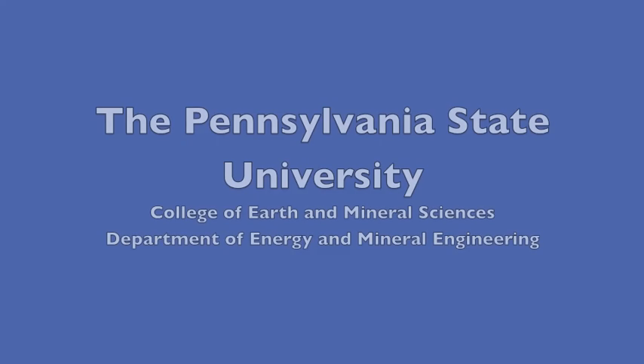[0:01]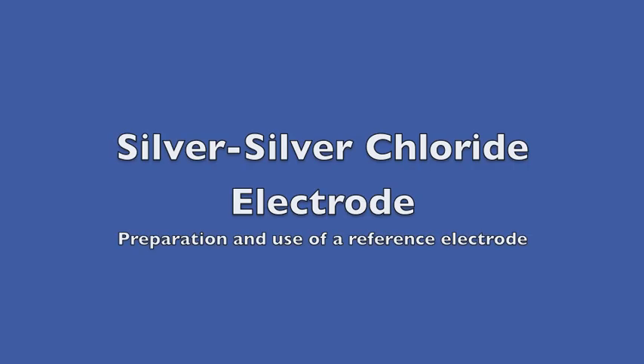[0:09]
The Pennsylvania State University, College of Earth and Mineral Sciences, Department of Energy and Mineral Engineering presents the Silver-Silver Chloride Electrode Laboratory Instructional Video.
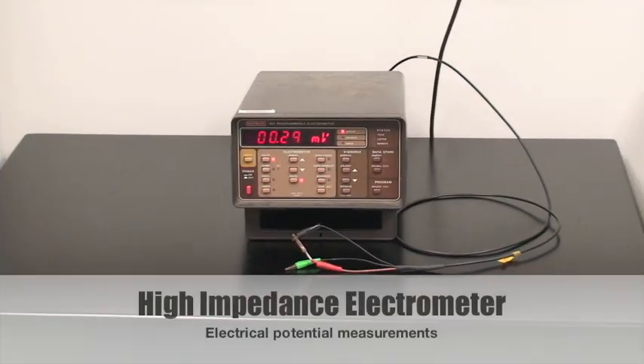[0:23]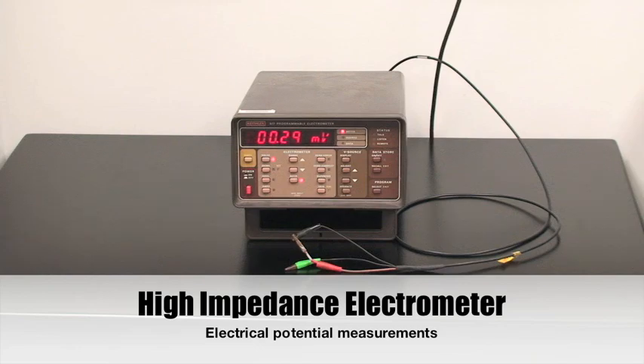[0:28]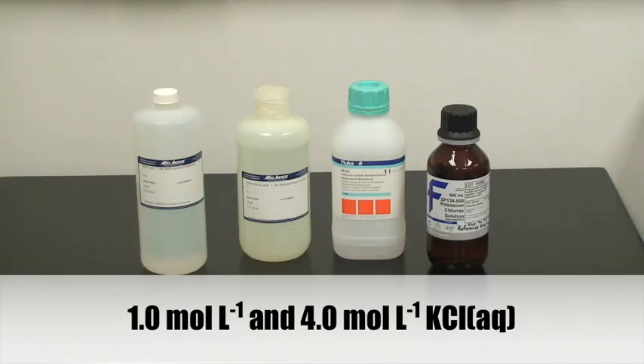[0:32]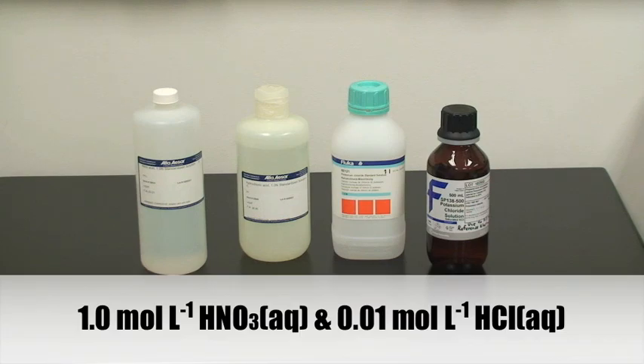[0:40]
Equipment and materials. We will need a high impedance electrometer for electric potential measurements, 1 molar aqueous potassium chloride, 4 molar aqueous potassium chloride, 1 molar nitric acid, and 0.01 molar hydrochloric acid.
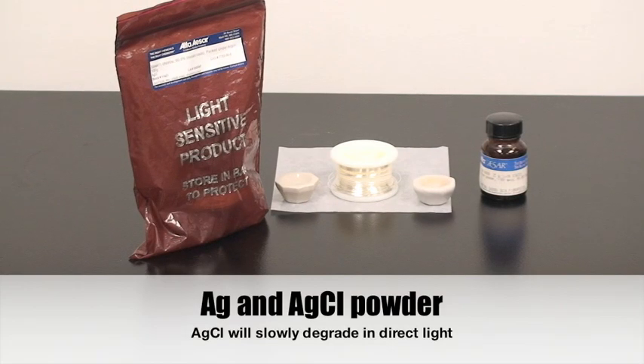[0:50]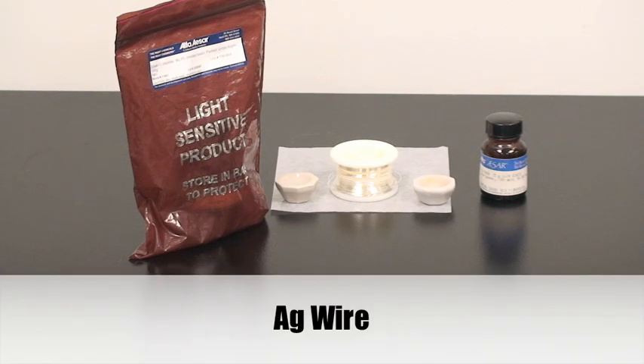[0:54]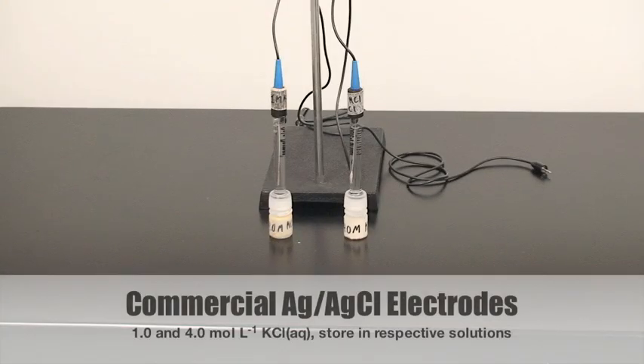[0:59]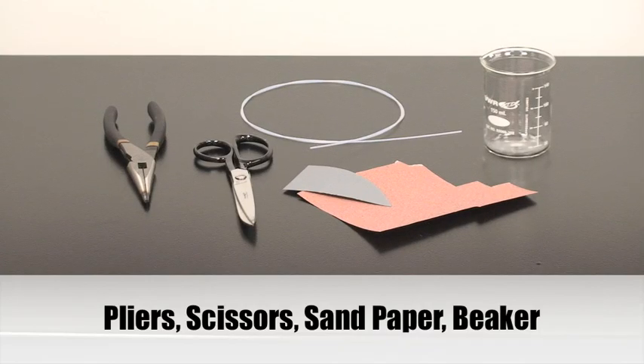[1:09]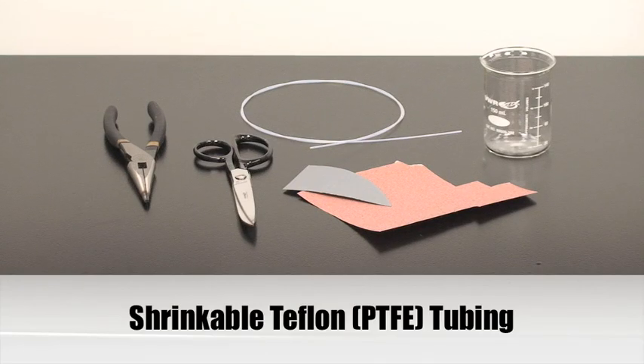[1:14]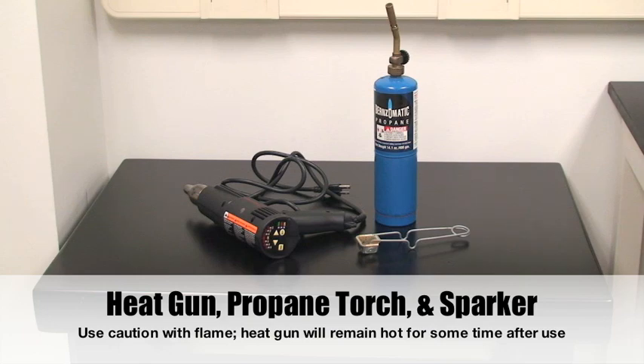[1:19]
Silver chloride and silver powder, as well as a spool of silver wire. A 1 molar and 4 molar potassium chloride silver-silver chloride reference electrodes. Pliers, scissors, sandpaper, a beaker, as well as shrinkable Teflon tubing. An electric heat gun, propane torch, and sparker or lighter.
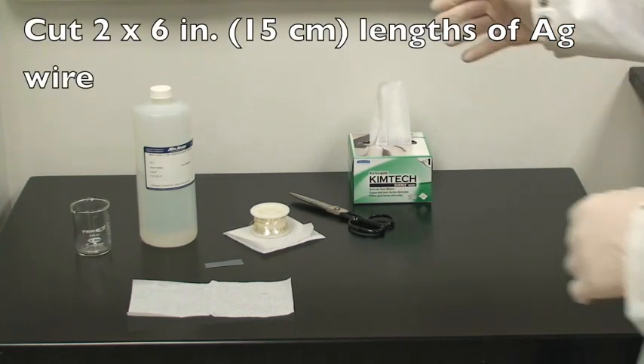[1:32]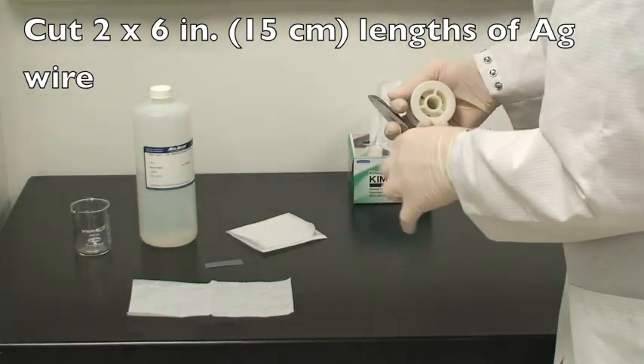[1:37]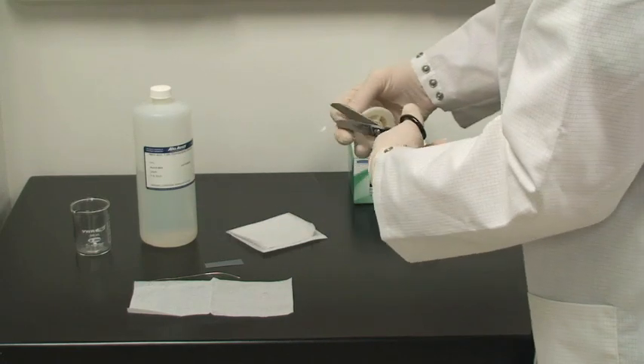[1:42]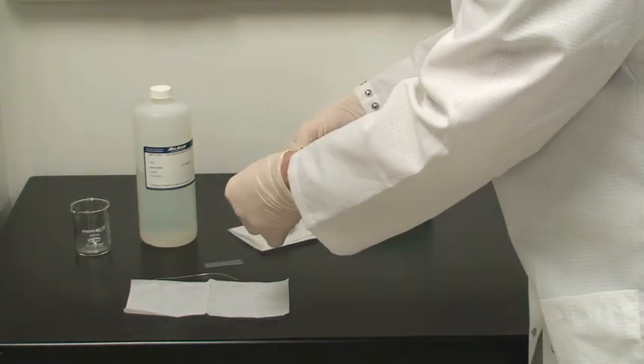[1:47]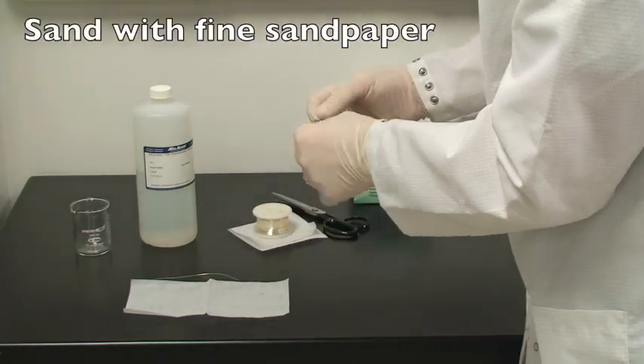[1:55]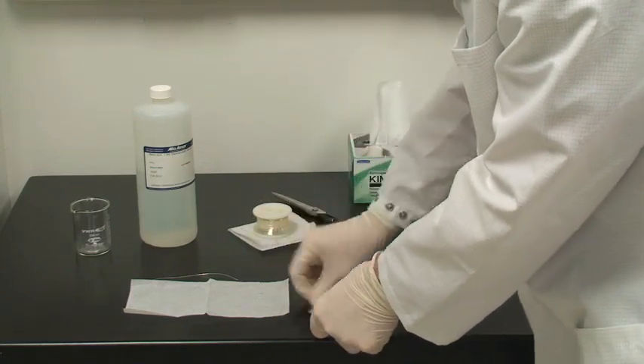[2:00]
Electrode preparation. Begin by cutting 2 6-inch lengths of silver wire. Next, lightly sand the bottom 1 to 2 inches of each wire to remove any oxidation or impurities.
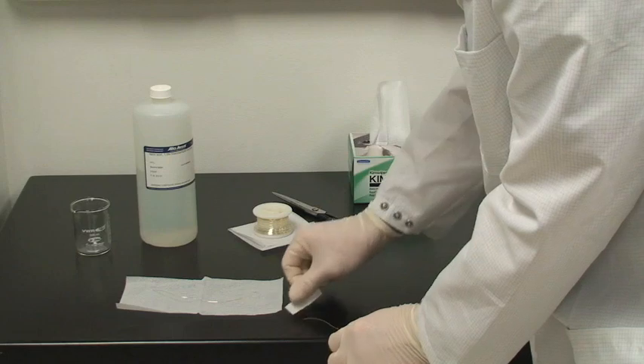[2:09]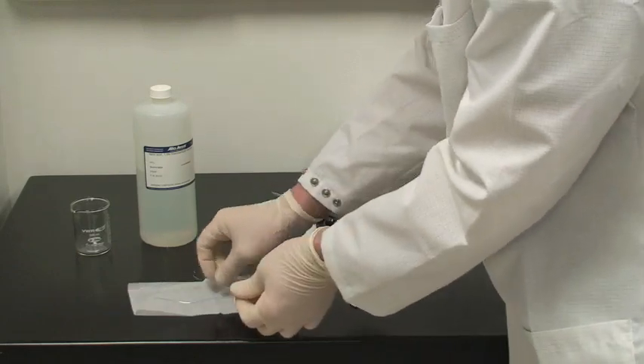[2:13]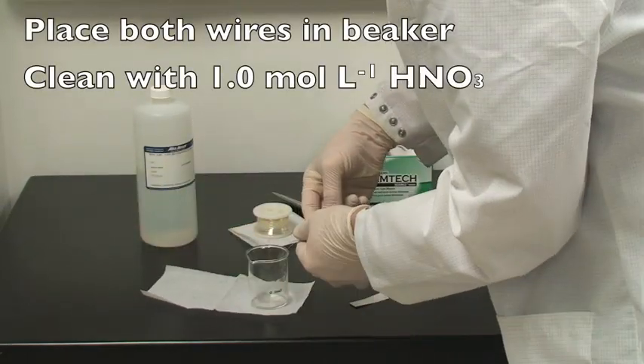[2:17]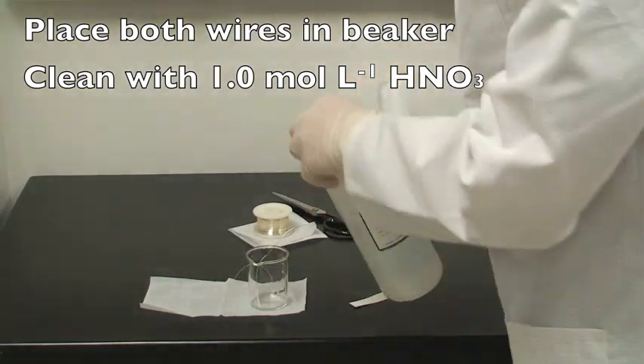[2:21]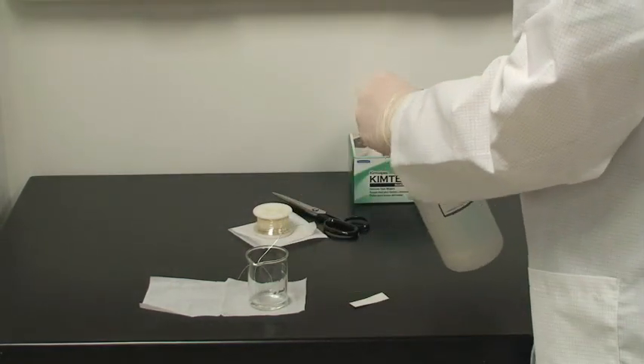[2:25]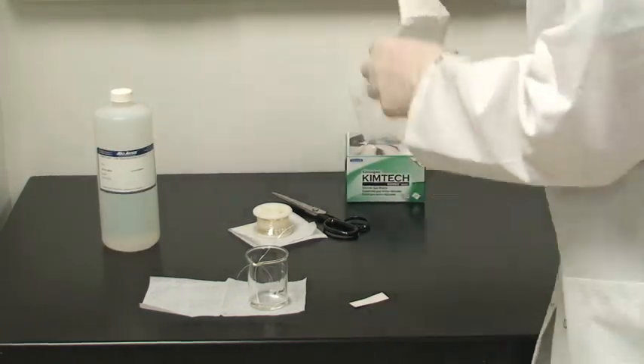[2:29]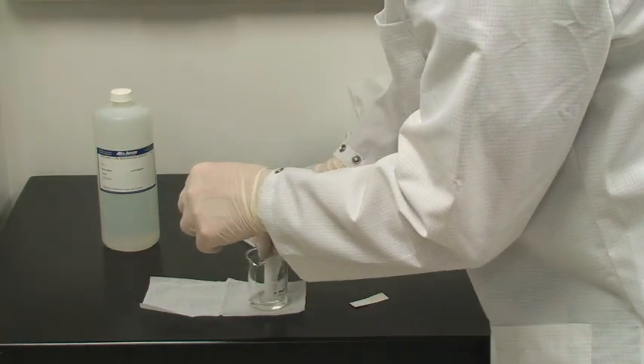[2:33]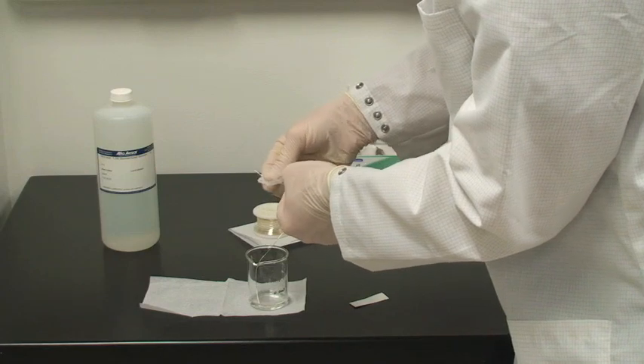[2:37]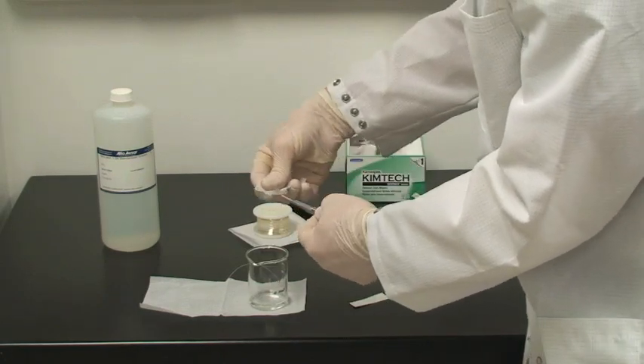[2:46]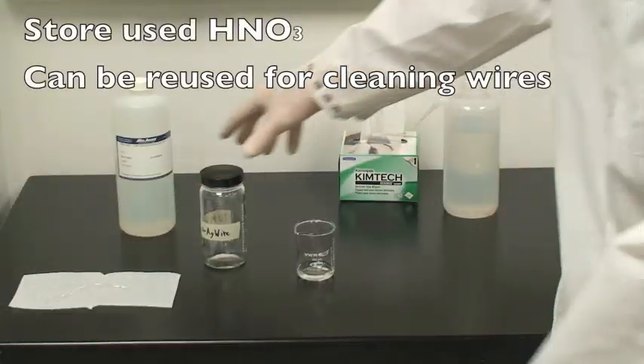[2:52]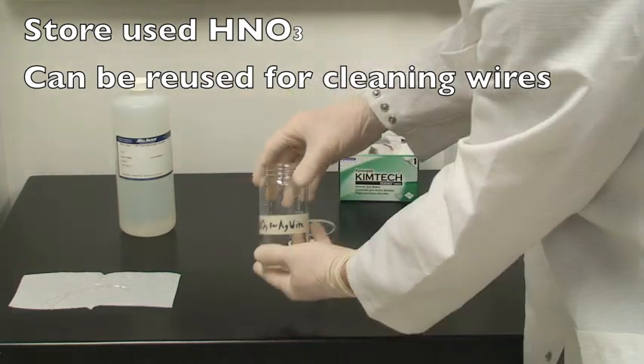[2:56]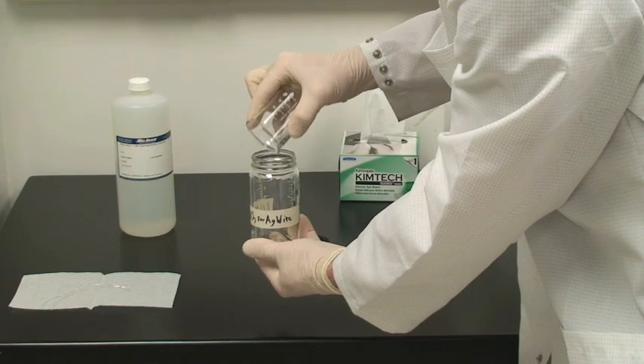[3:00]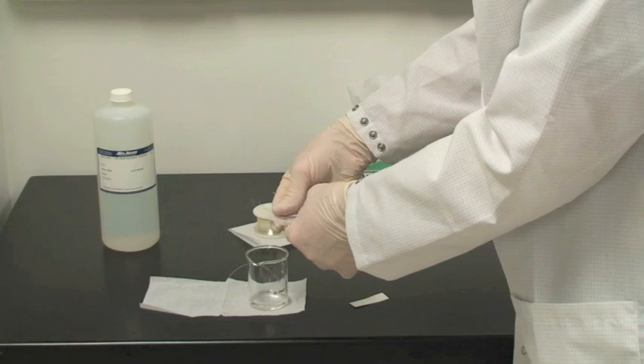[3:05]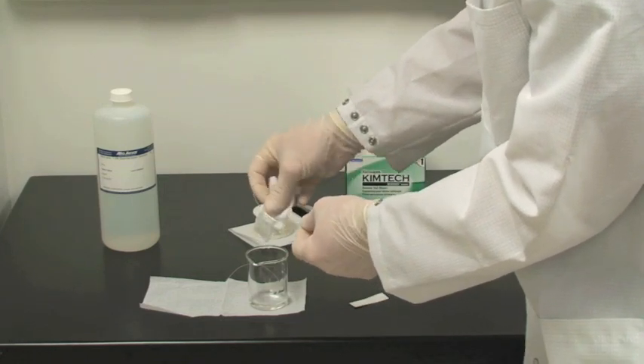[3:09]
Place both wires, sanded end down, into a clean beaker and add a small amount of nitric acid. If possible, please reuse the nitric acid in the marked storage container. Then use the nitric acid to clean the sanded edges of the wire to further improve the purity of the silver. Then return the used nitric acid to the marked storage container so that it may be reused by other students. Finally, rinse the electrodes with distilled water and wipe clean.
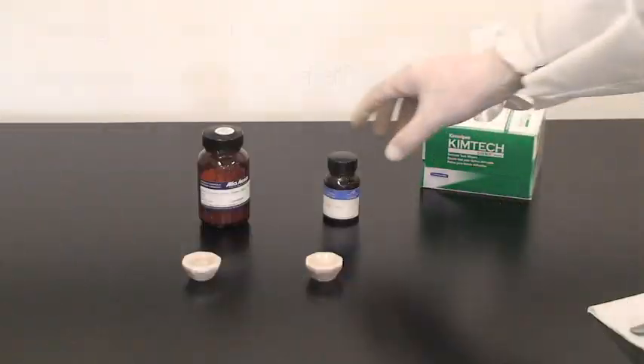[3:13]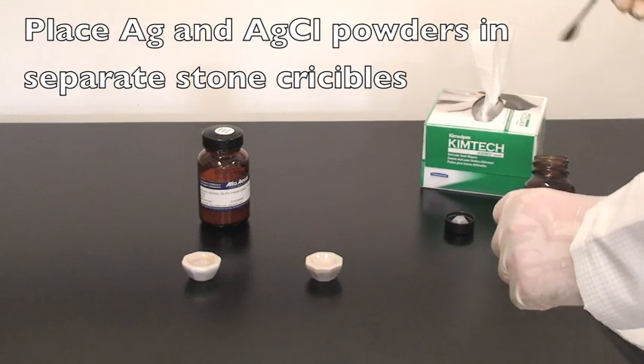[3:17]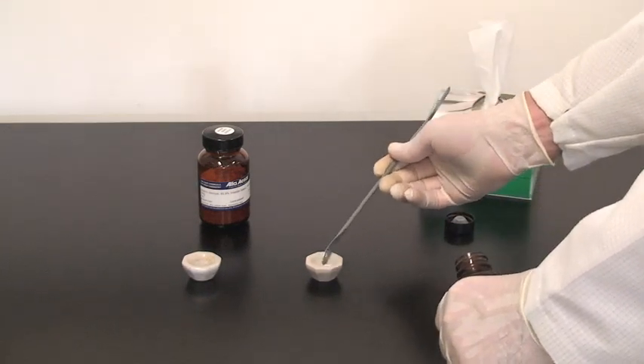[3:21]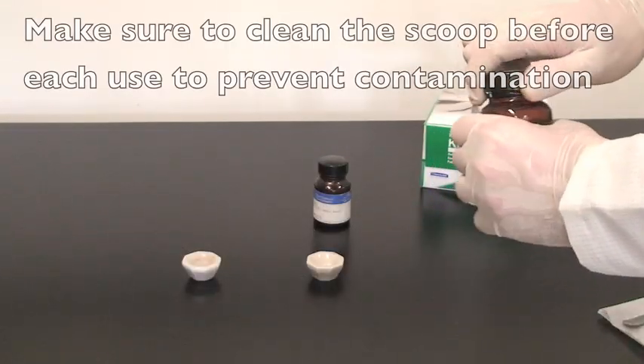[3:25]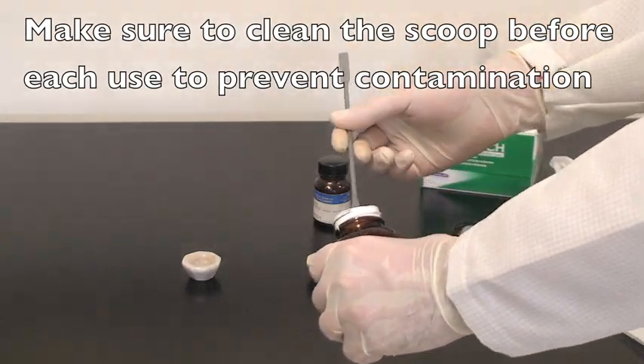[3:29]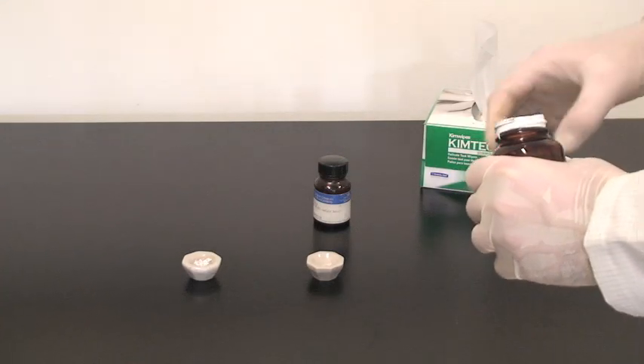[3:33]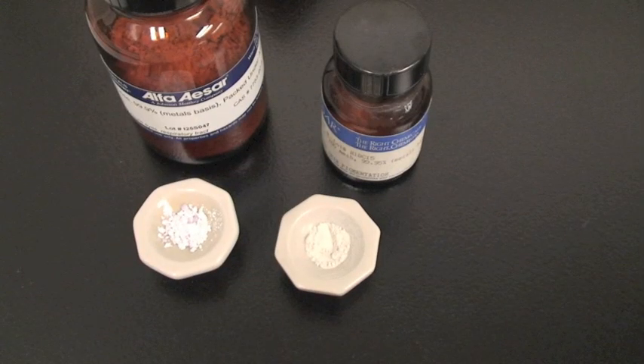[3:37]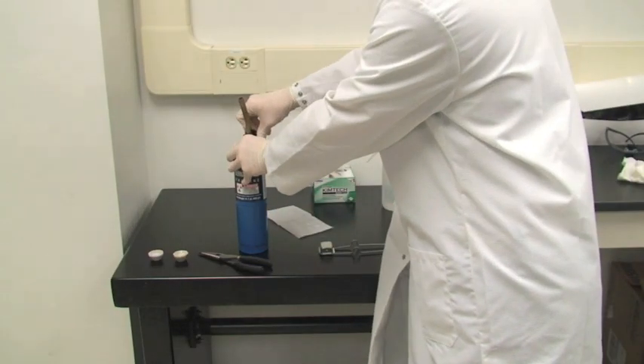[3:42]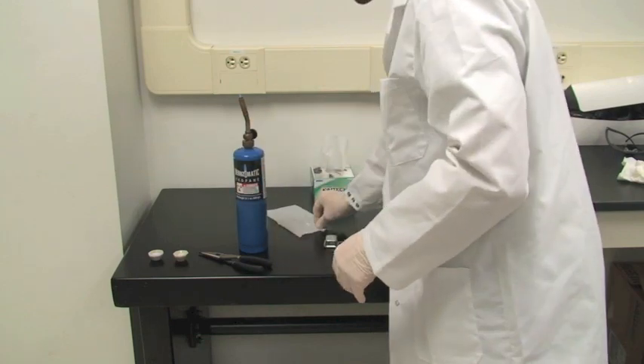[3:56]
We will now place a small amount of silver powder into one container and silver chloride powder into a separate container. We'll now use the propane torch in order to form the actual electrodes. Please ensure that the propane torch is not pointing towards you or anyone else. Turn the gas up to a moderate amount, use the sparker to ignite it, and then turn the gas flow rate down to the smallest quantity that will maintain a flame.
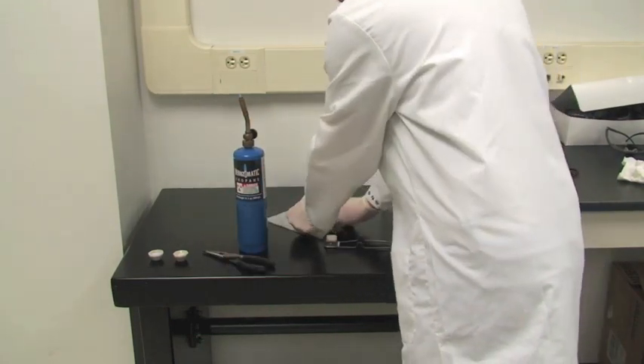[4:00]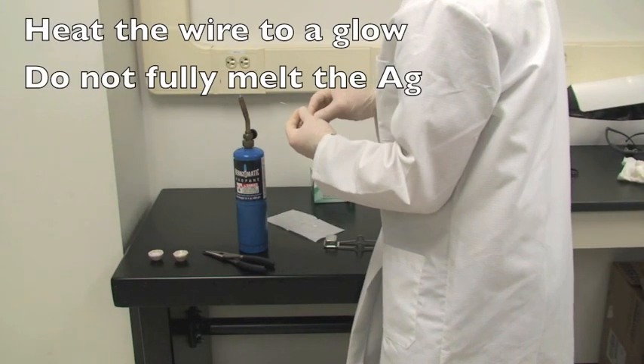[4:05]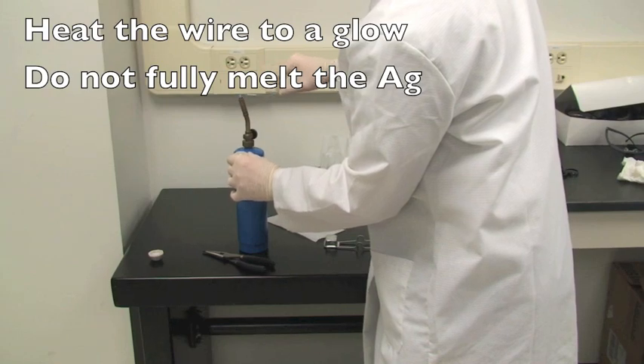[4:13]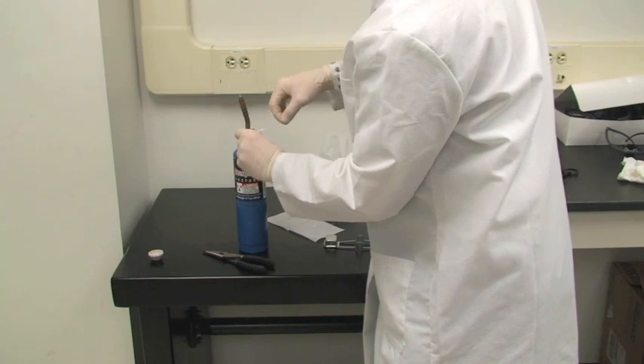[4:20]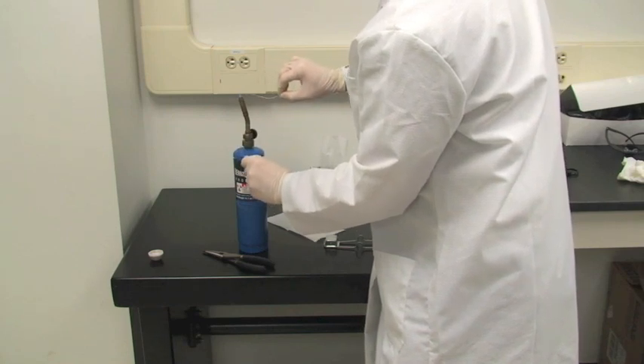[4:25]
You must be careful not to melt the silver wire completely, or you'll have to start again from scratch. However, if you lose only an inch or so of the electrode, you can continue and start again with the same wire. Begin by heating the tip of the wire until it begins to glow. If you hold the opposite end of the wire, it does not conduct sufficient heat to harm your hands. However, if you want more precision, you can use the pliers to hold directly in the flame. Waving the wire through the flame ensures proper heat distribution.
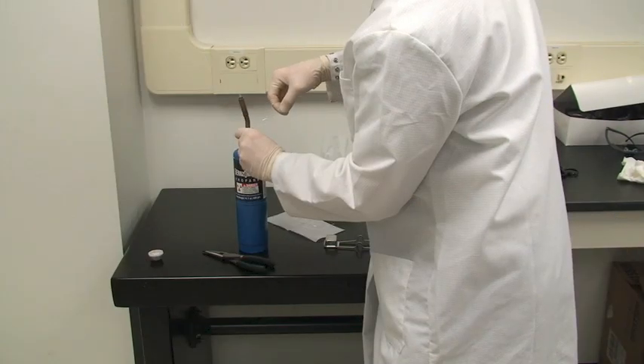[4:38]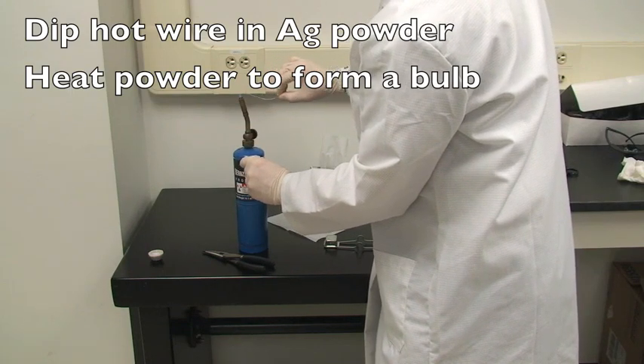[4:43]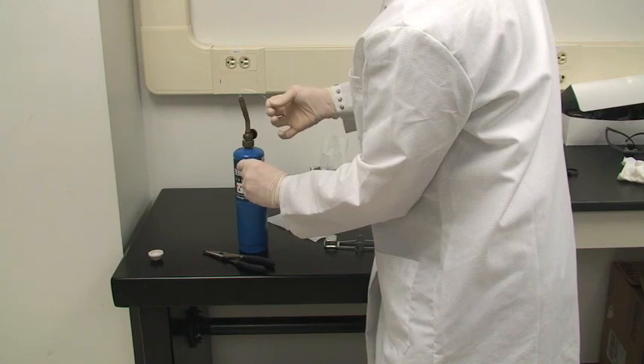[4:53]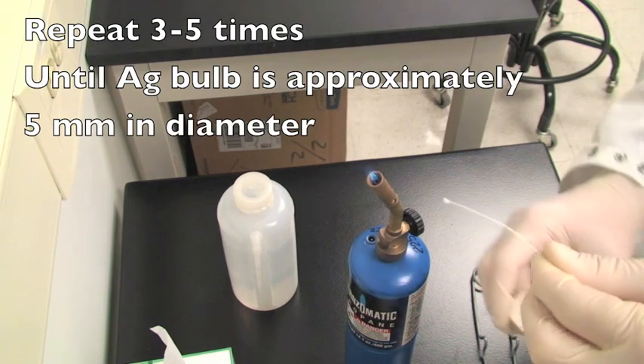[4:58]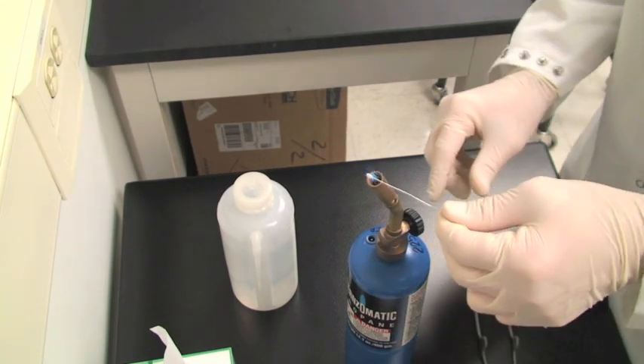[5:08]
When the wire is sufficiently hot, dip the wire into the silver powder or roll it through the silver powder, and then repeat the process by heating the silver powder until it glows. It will at that point begin to sinter onto the wire itself and become a single piece of silver. We'll repeat this process approximately 3 to 5 times until the silver bulb is sufficiently large, approximately 5 millimeters in diameter. Using some care here not to overheat the bulb will save you time in the long run by not having to repeat the entire process.
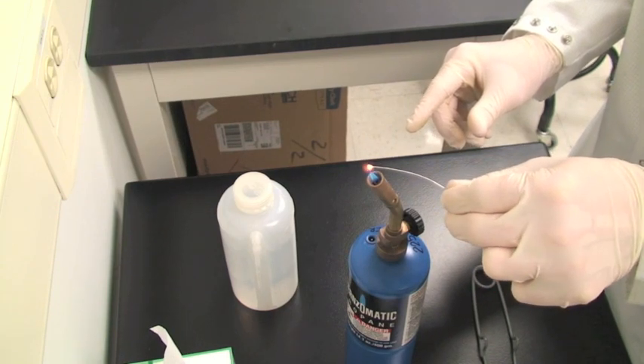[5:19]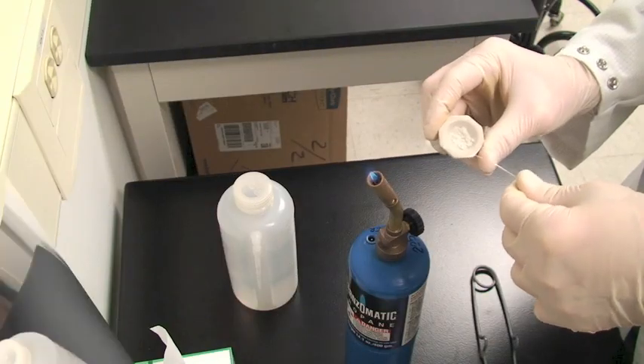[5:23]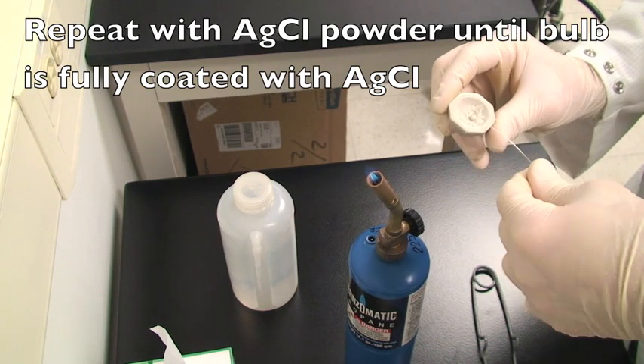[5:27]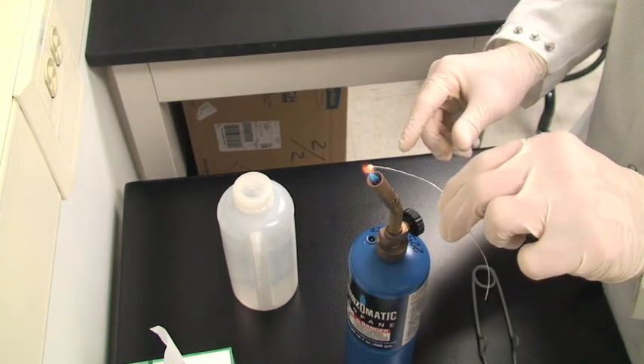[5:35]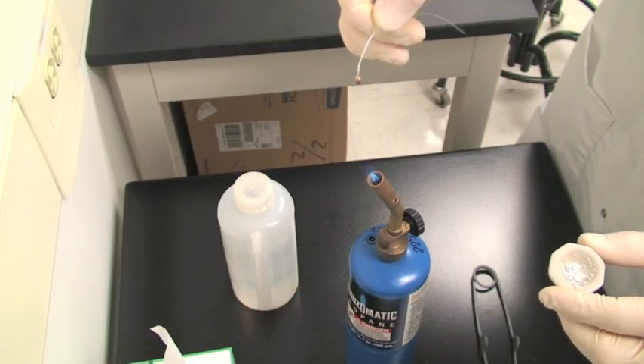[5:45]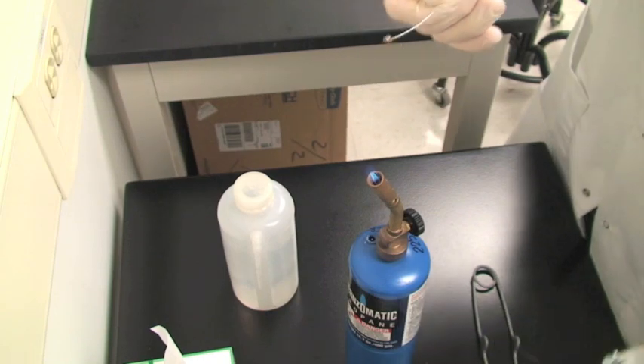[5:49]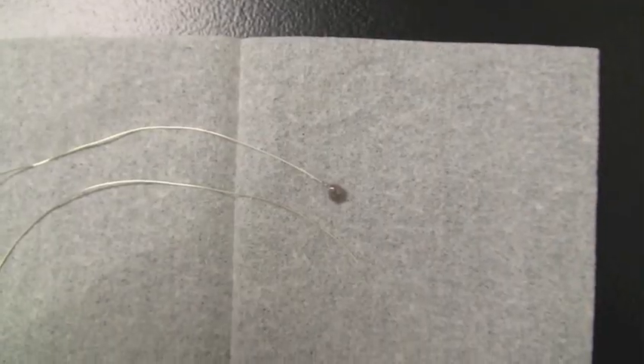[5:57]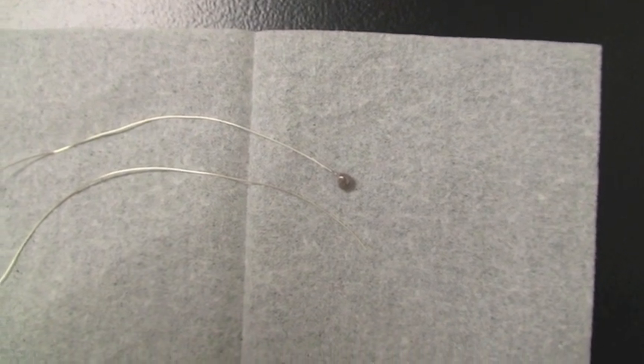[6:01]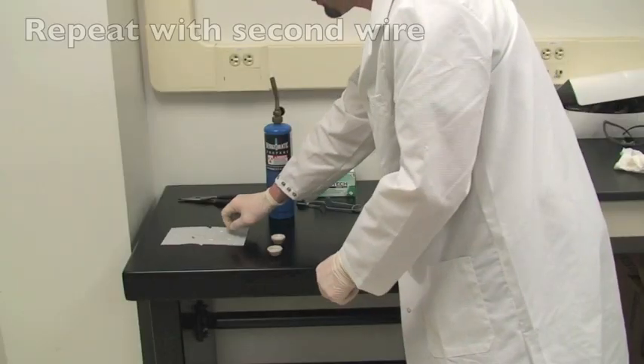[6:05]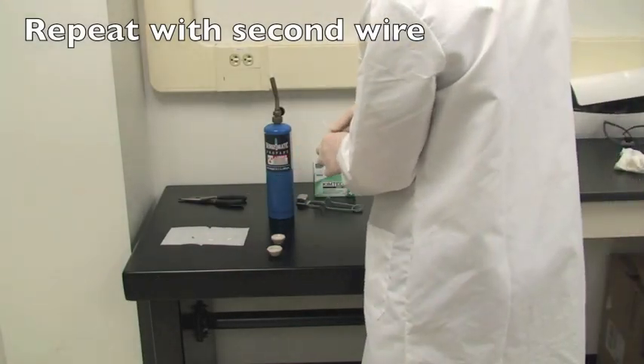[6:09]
We'll now repeat the entire process using silver chloride to coat the outside of the bulb. Silver chloride has a significantly lower melting point than silver, and thus less heat will be needed in order to form the final silver chloride coating on the electrode. The process should be repeated until the entire silver bulb has a coating of silver chloride. Repeat the entire process with the second wire to make two identical silver-silver chloride electrodes.
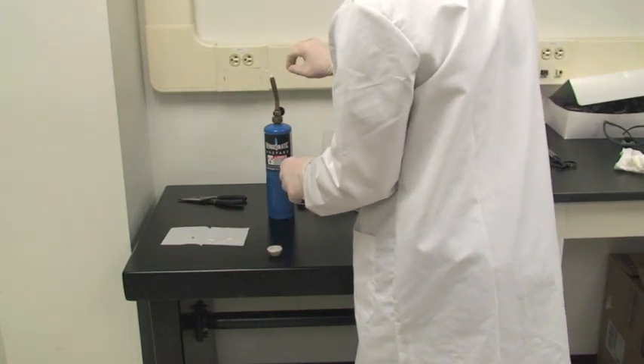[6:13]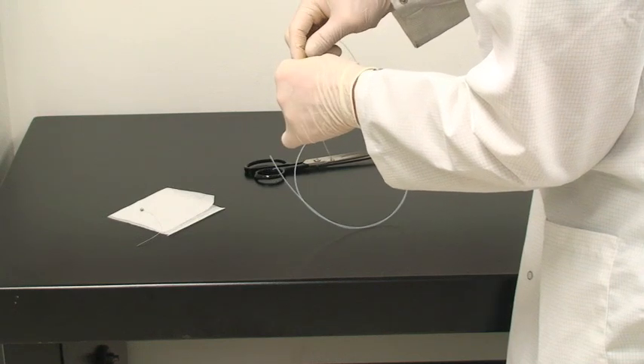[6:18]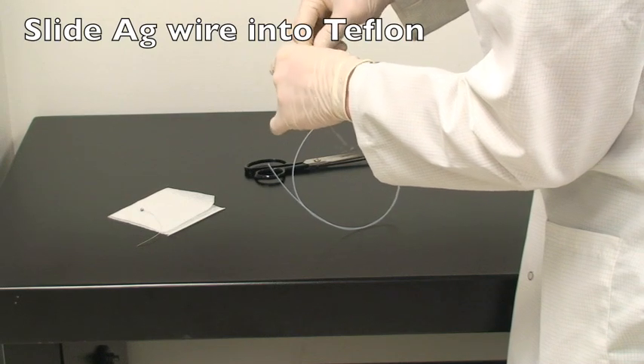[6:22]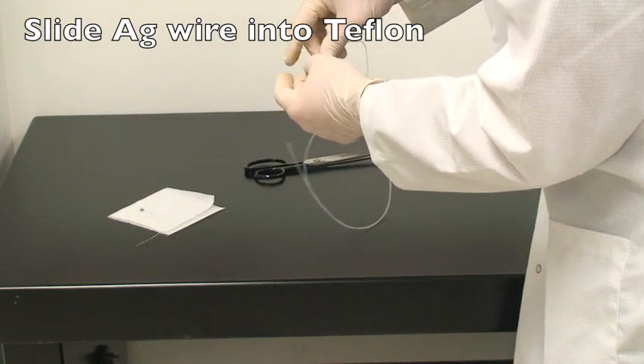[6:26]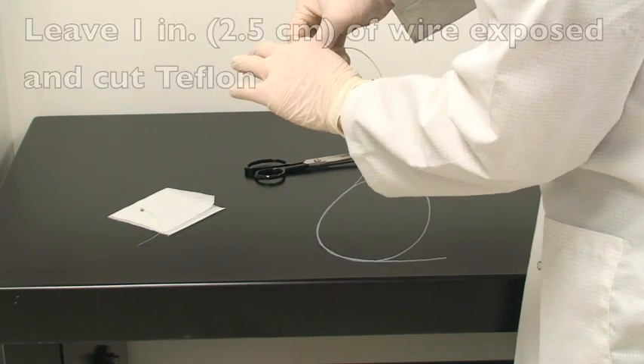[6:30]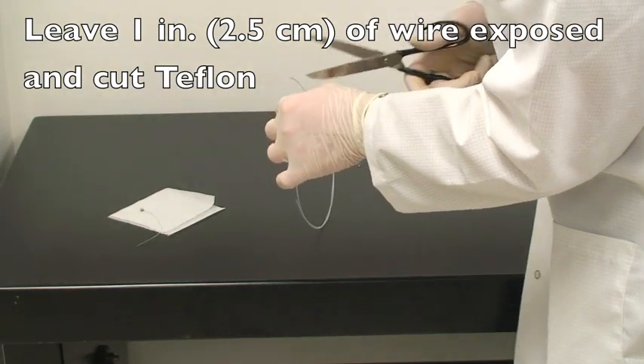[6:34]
Next, we'll coat the exposed silver wire with Teflon. To do this, we'll slide the silver wire into the shrinkable Teflon tubing. Leave about 1 inch above the bulb and then cut the shrinkable Teflon so that it's flush with the wire.
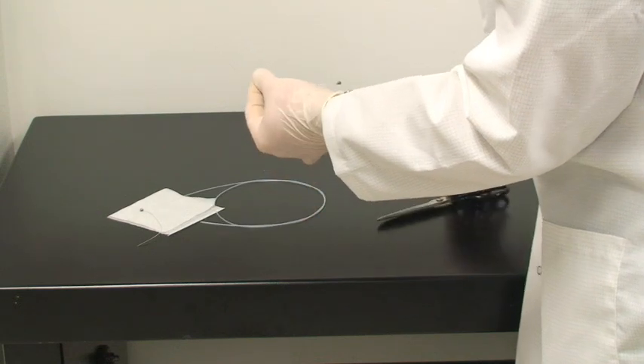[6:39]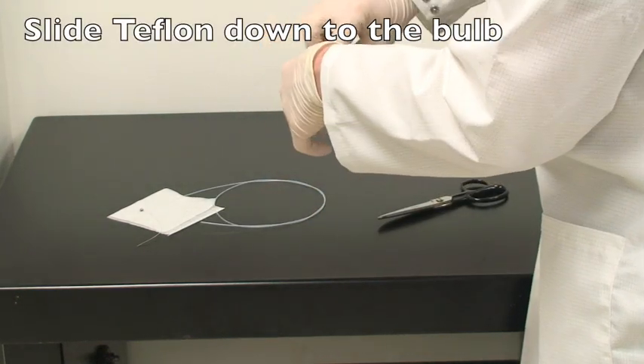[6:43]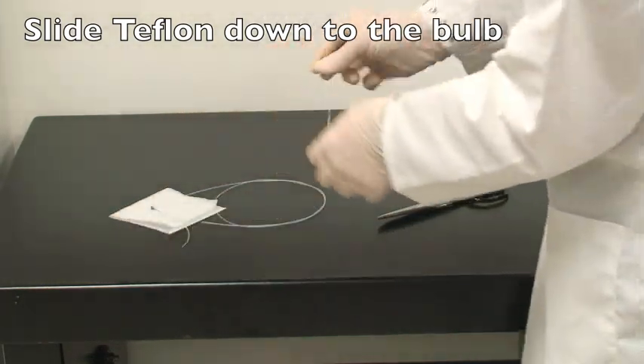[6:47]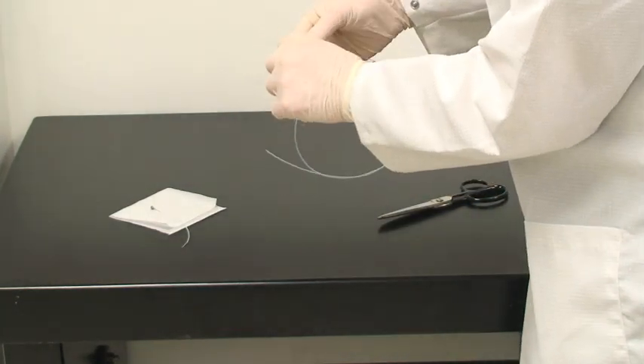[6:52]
Now slide the shrinkable Teflon all the way down so that it is flush with the bulb, leaving the only exposed silver at the top to function as a lead. And repeat this process with the second electrode.
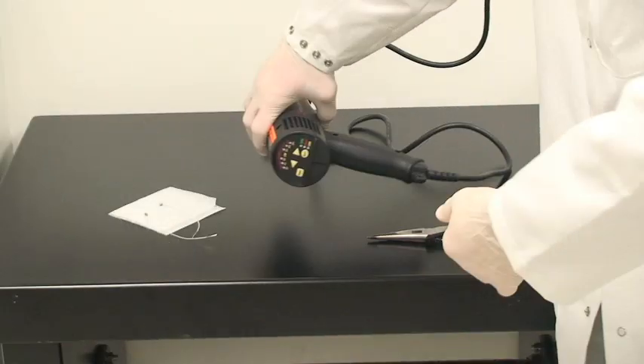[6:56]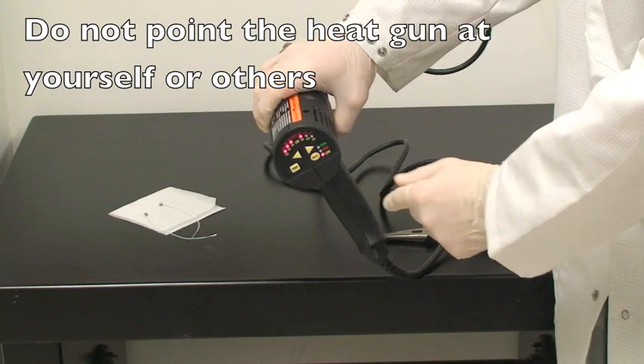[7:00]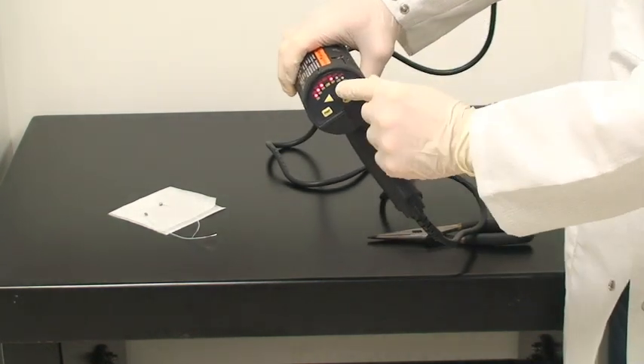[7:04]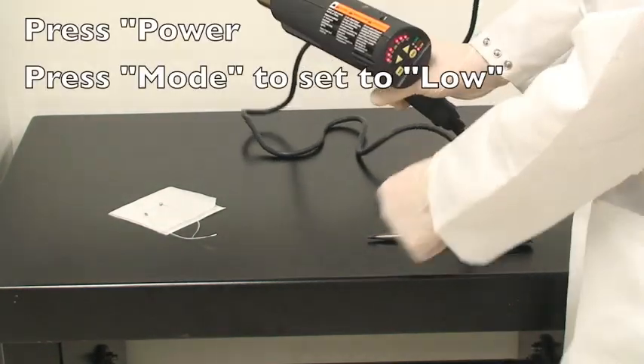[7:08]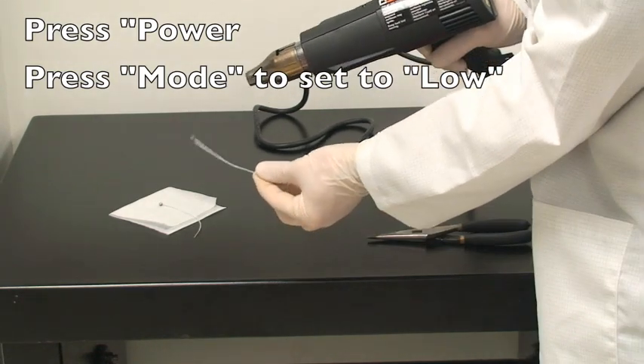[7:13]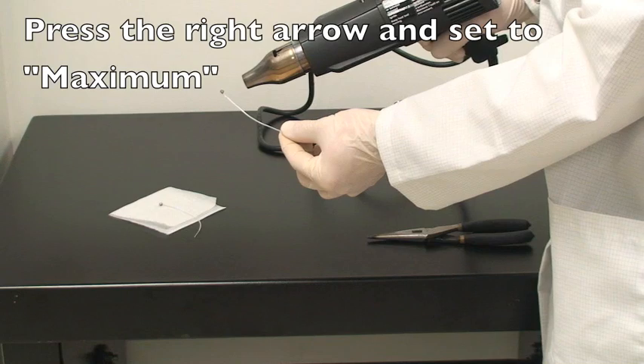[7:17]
We'll now use the electric heat gun to shrink the Teflon onto the wire. Both the metal tip and the air coming out can cause burns, so please use caution with the heat gun. You may power it up by pressing the power button, and then press the mode button until a setting of low is on the display. Then use the right arrow to set the heat to the maximum level.
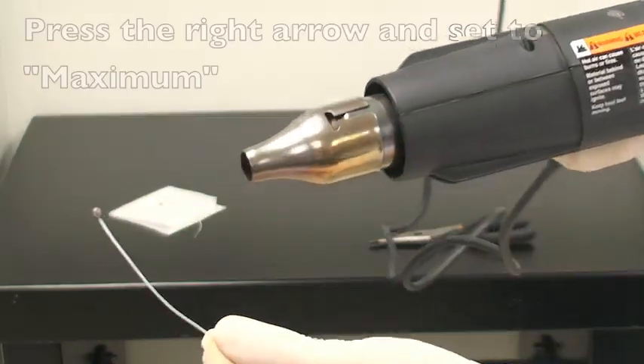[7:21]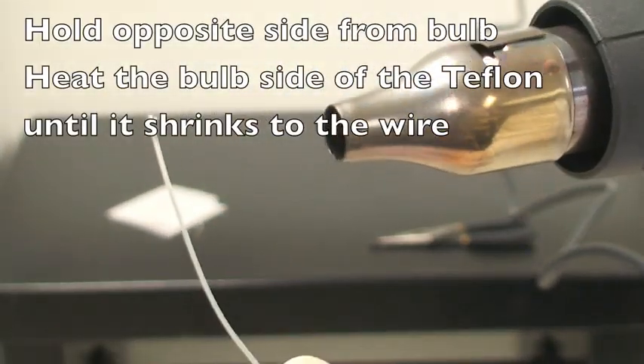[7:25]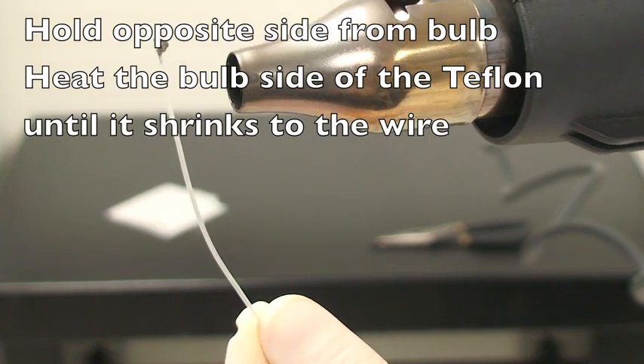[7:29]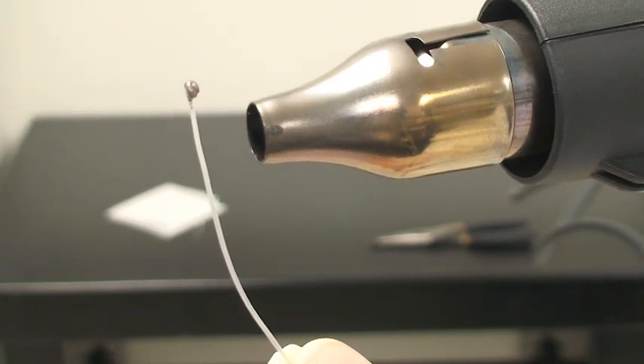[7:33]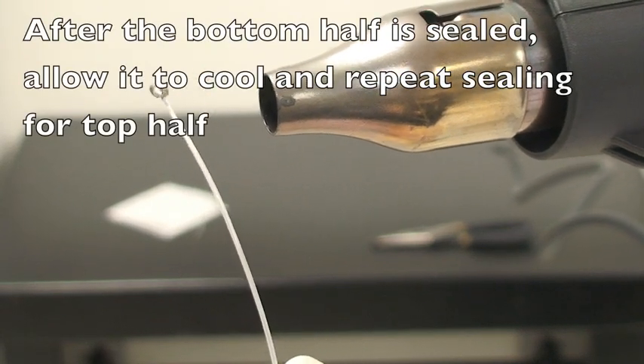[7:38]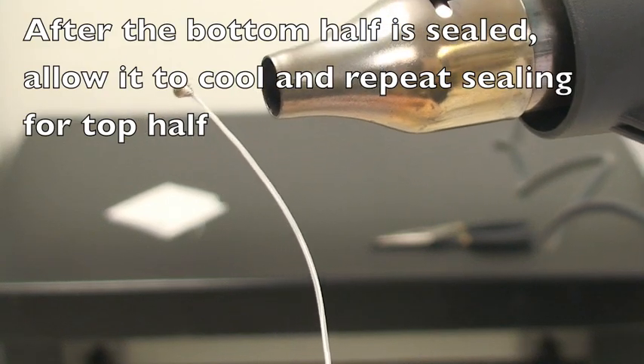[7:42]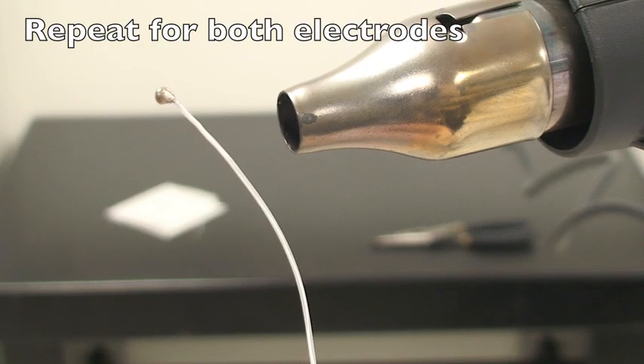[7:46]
Now, holding the lead side of the electrode and ensuring that the Teflon stays pushed up against the bulb, we'll heat the bulb side of the shrinkable Teflon. Once the Teflon has sealed the bulb side of the electrode, allow it to cool and then repeat on the lead side of the electrode. And repeat for both electrodes.
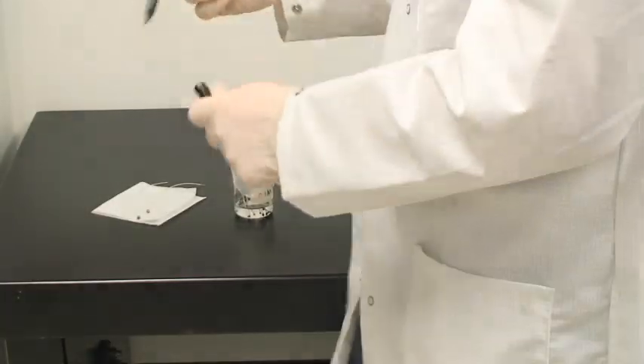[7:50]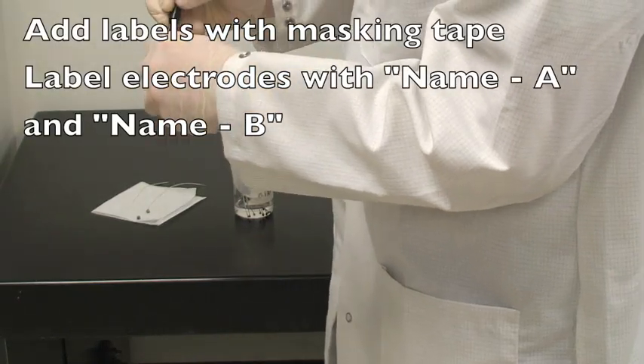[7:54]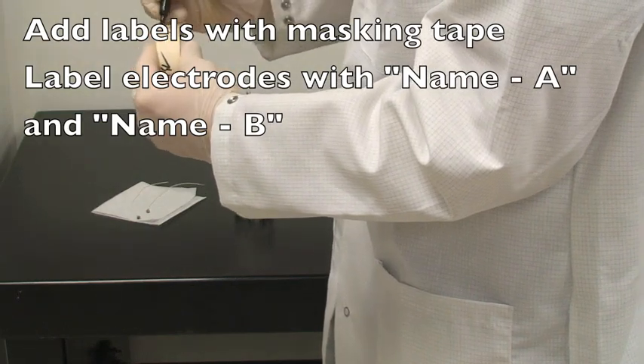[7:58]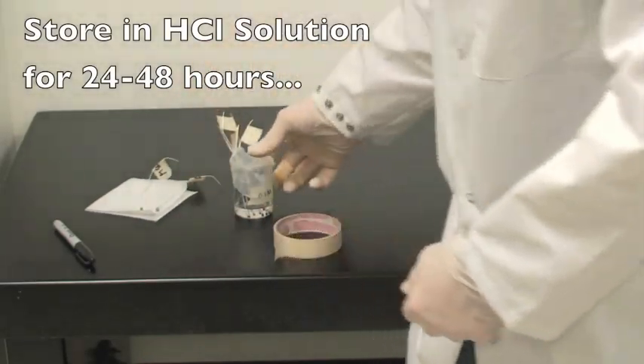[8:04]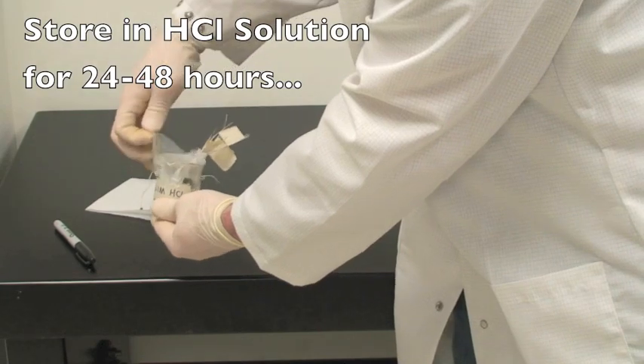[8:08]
We'll now label each electrode using masking tape. And be sure to distinguish between the electrodes by labeling them A and B, and of course including your name. Next, we'll store the electrodes in the hydrochloric acid solution that's provided in the cabinet with the other electrodes.
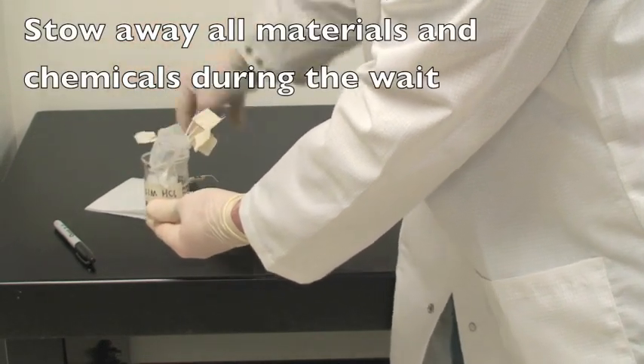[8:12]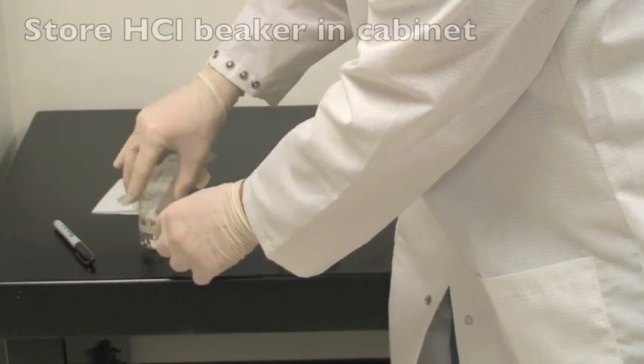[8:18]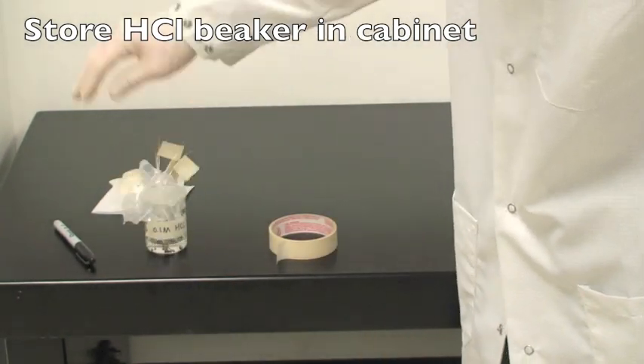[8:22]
We'll allow the electrode to sit for 24 to 48 hours, so please take the time to clean up the lab and put away all chemicals. And store the beaker with the electrodes back in the cabinet so that it's not exposed to sunlight.
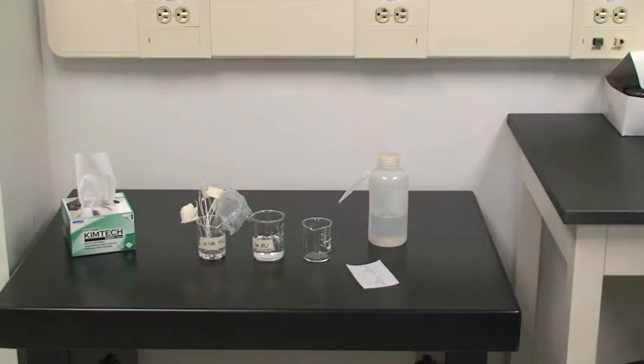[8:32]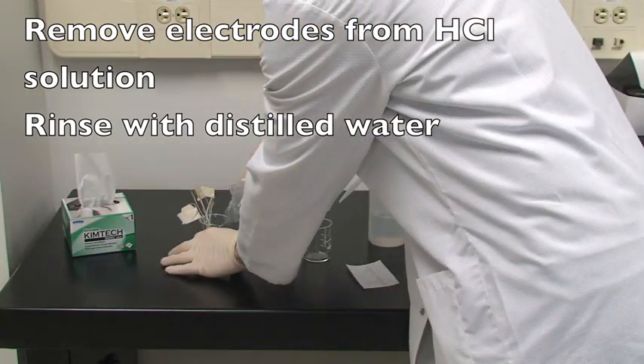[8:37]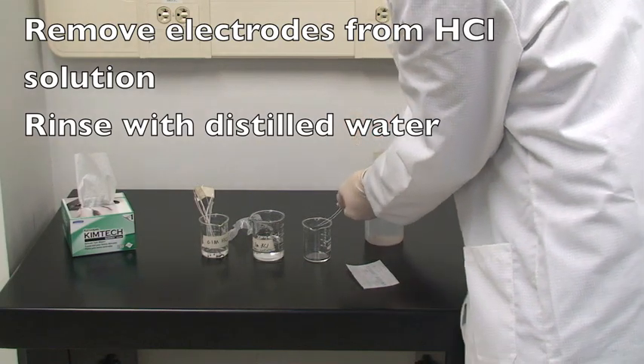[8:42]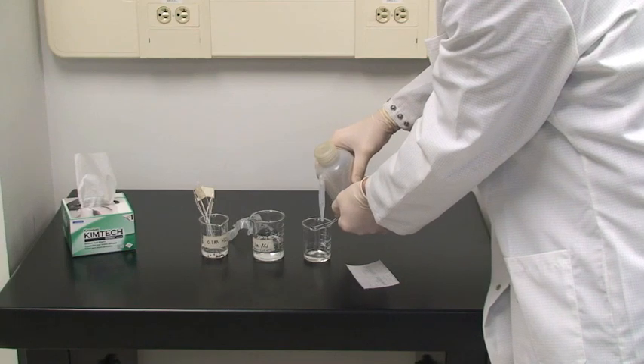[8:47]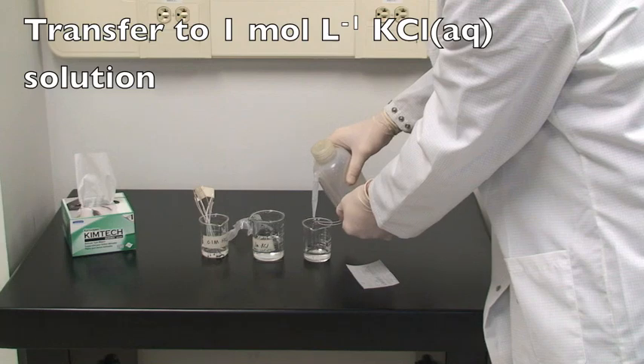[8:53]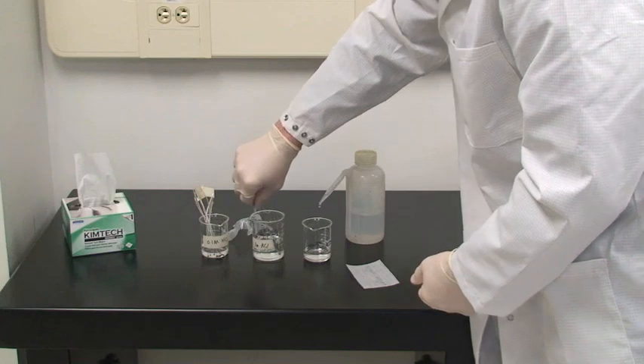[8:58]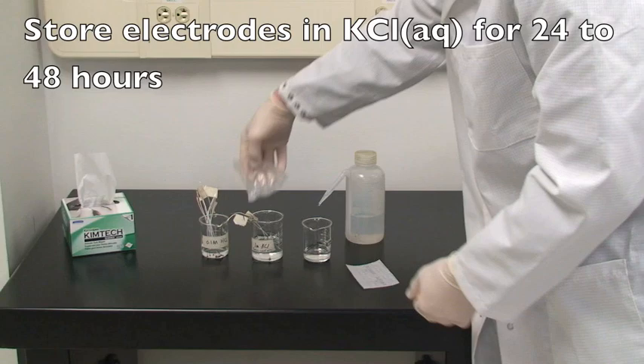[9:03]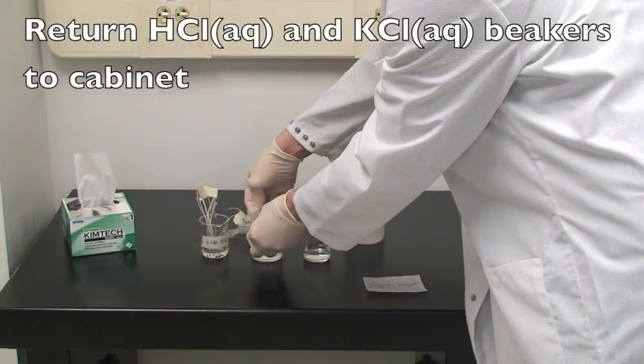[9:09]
After 48 hours, we'll return and remove the electrodes from the hydrochloric acid solution and rinse them with distilled water. We'll then transfer both electrodes to 1 molar potassium chloride storage solution. We'll allow the electrodes to sit in the potassium chloride solution for 24 to 48 hours. Return both beakers, the hydrochloric acid and the potassium chloride, to the cabinet underneath the counter.
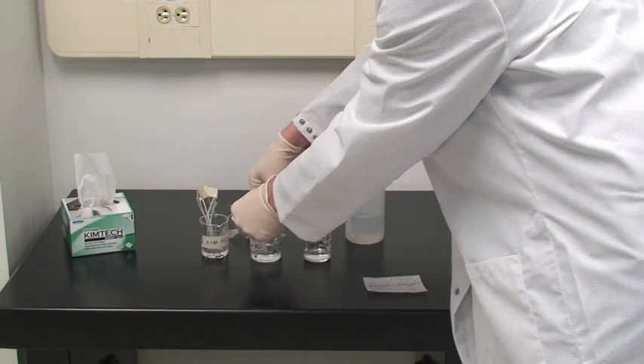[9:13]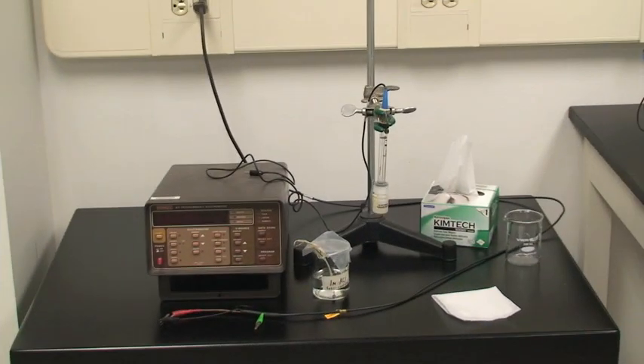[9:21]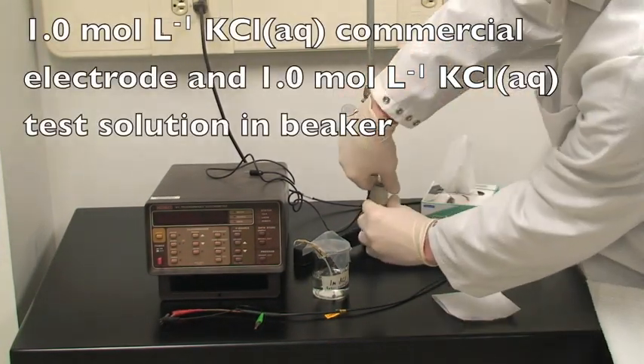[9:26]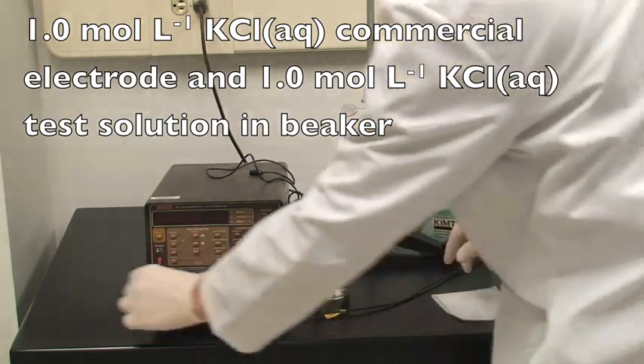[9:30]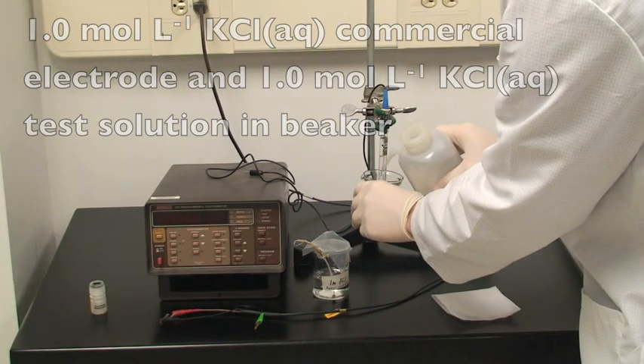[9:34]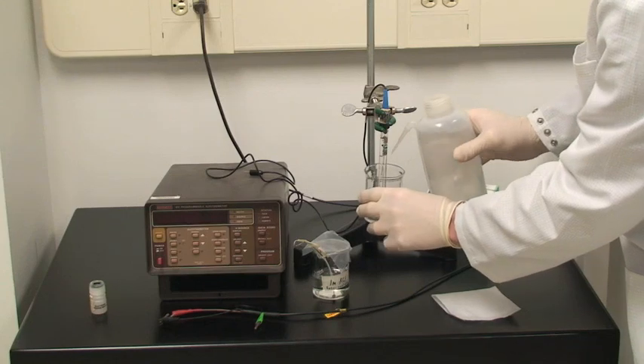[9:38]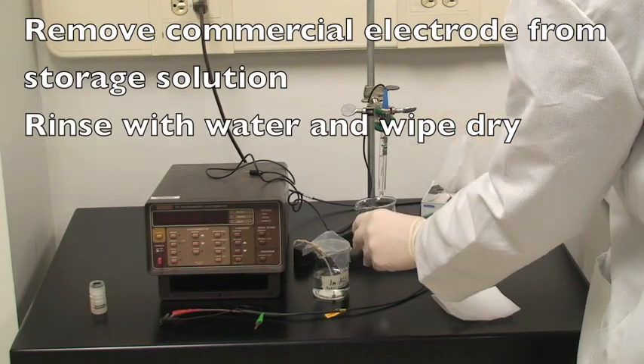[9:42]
The experimental phase. First, we will measure the electric potential generated between our electrodes in 1 molar potassium chloride and the commercial reference electrode with 1 molar potassium chloride. Remove the 1 molar reference electrode from its storage solution, rinse with distilled water, and wipe dry.
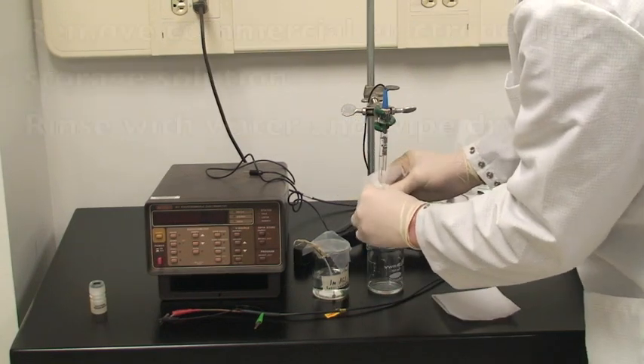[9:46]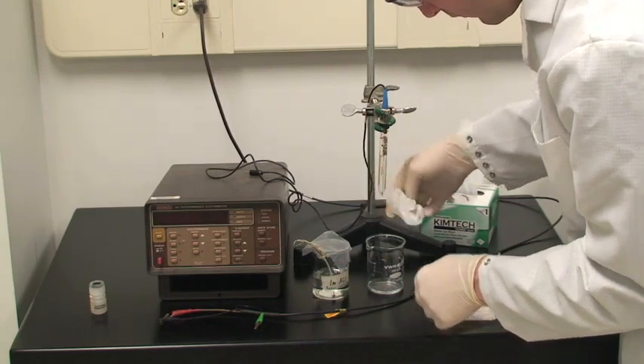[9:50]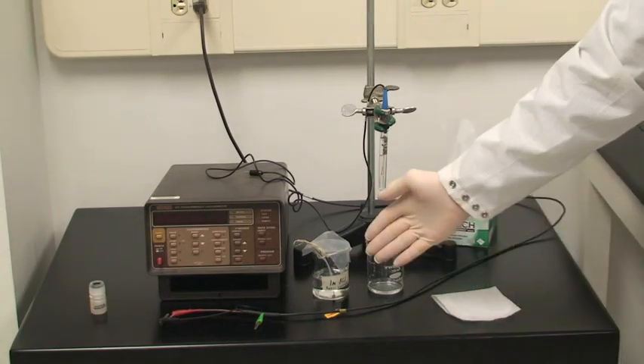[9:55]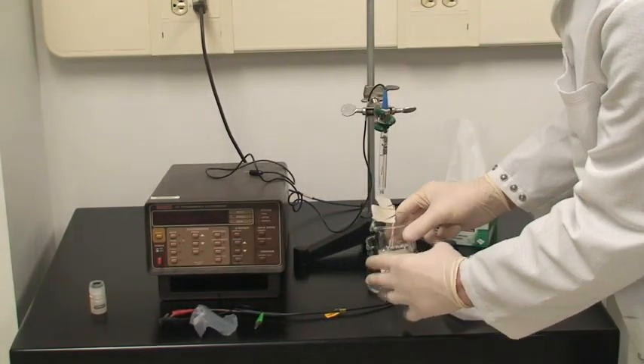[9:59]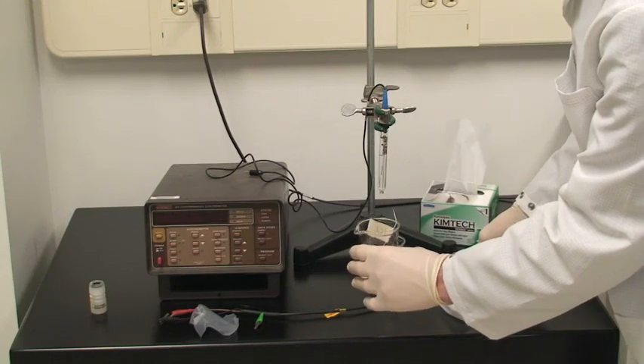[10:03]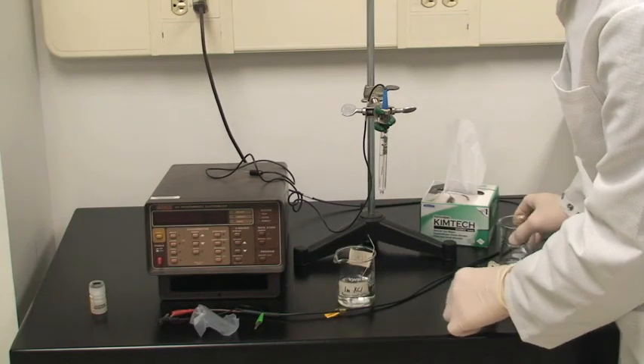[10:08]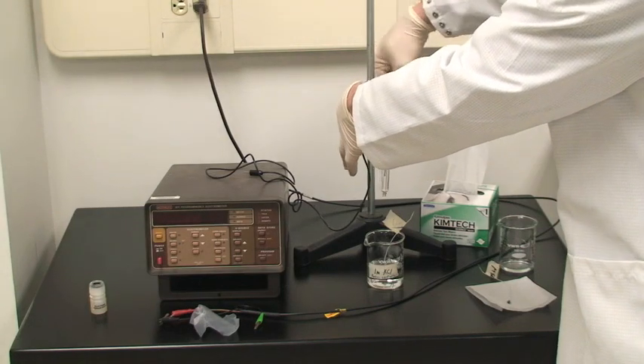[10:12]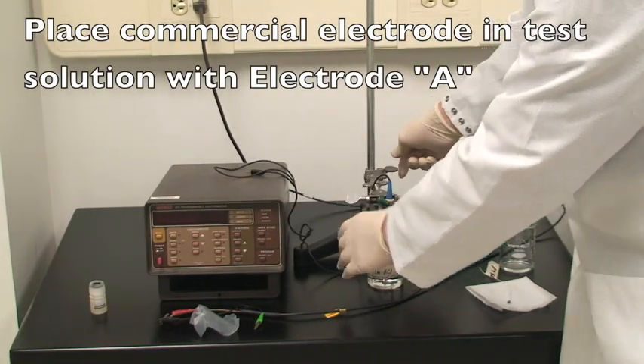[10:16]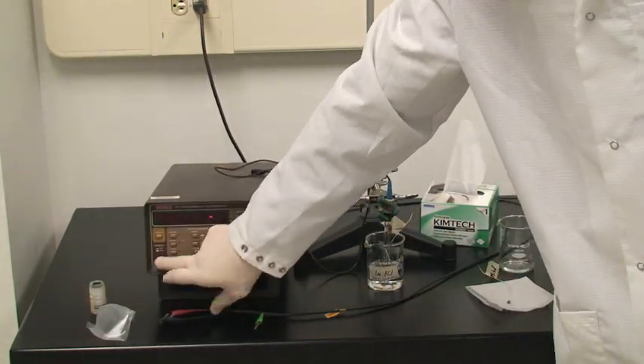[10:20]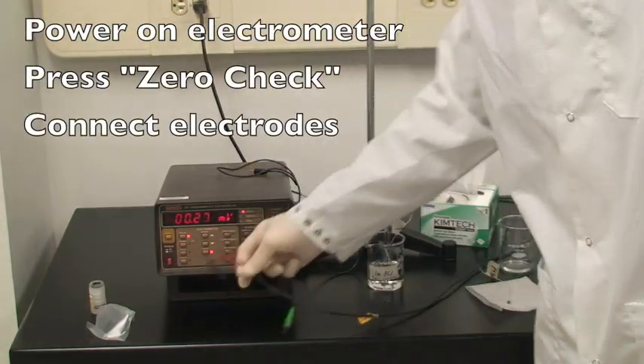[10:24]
We will test electrode A and electrode B independently, so remove electrode B from the test beaker for now. Along with electrode A in the 1 molar potassium chloride solution, place the tip of the 1 molar potassium chloride reference electrode. Turn on the electrometer by pressing the power button and then the zero check button.
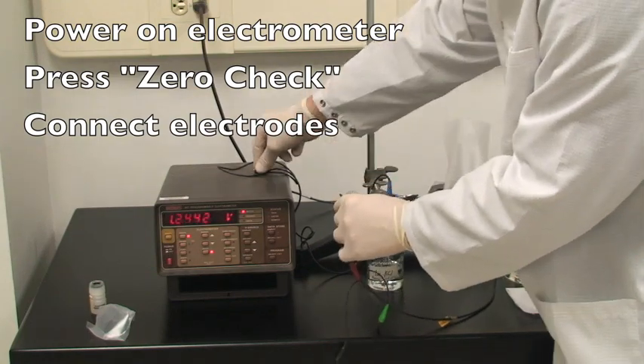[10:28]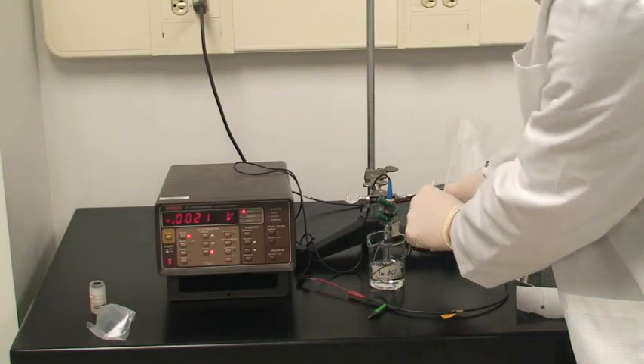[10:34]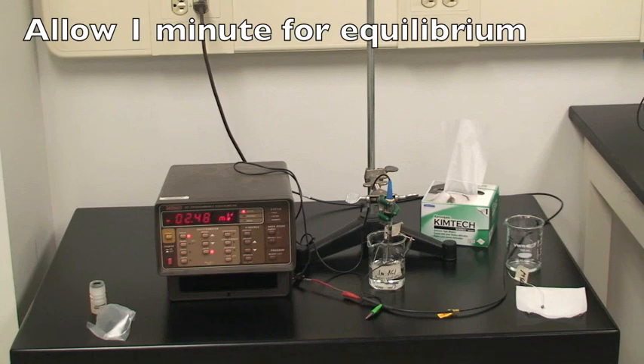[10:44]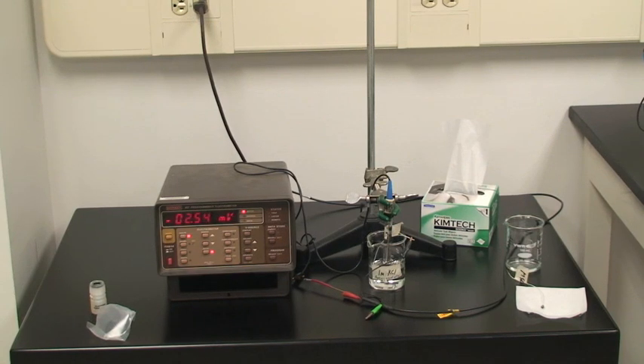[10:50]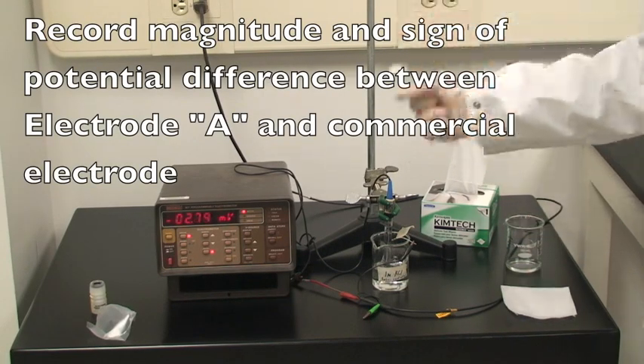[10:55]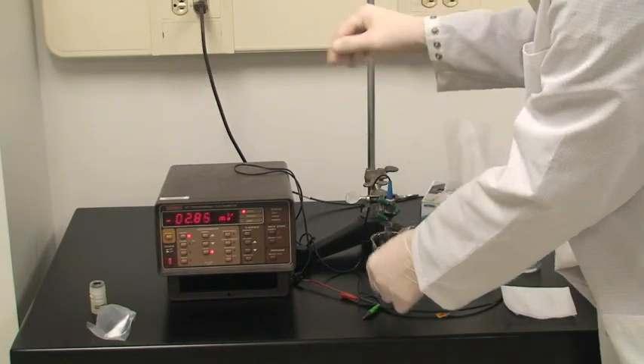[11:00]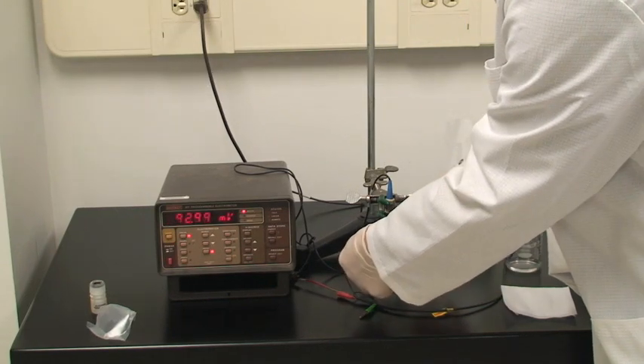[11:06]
Connect one lead from the electrometer to your electrode and the second lead to the reference electrode, and be sure to use the same conventions for positive and negative throughout the experiment. Allow approximately 1 minute for the electric potential to reach a steady value. Record both the magnitude and sign of the electric potential generated between electrode A and the 1 molar reference electrode. A potential of less than 3 millivolts should yield an experimental error of less than 10%.
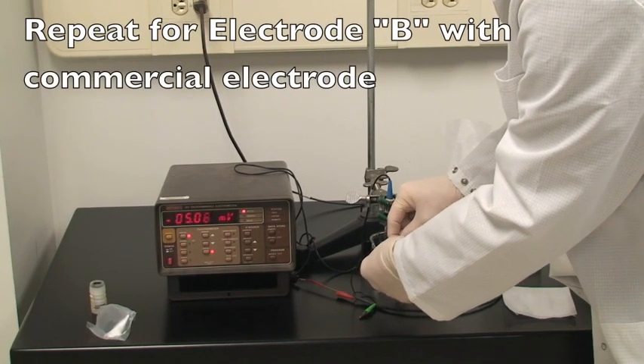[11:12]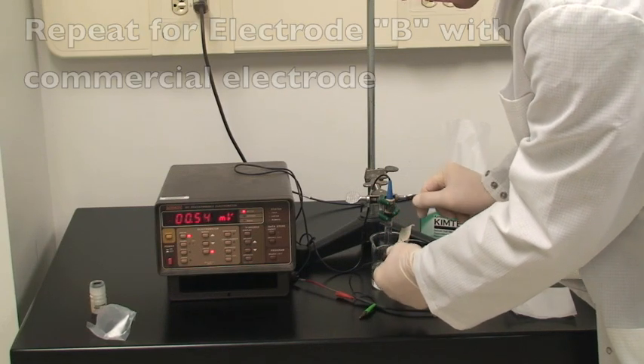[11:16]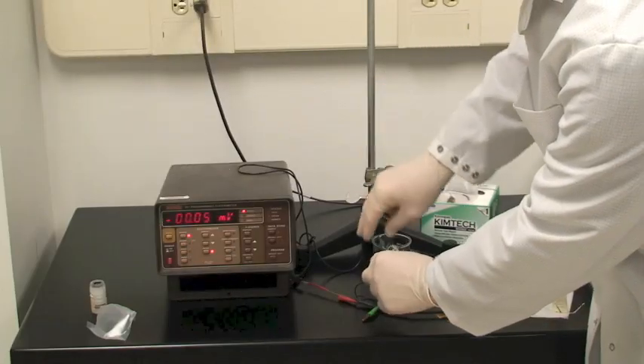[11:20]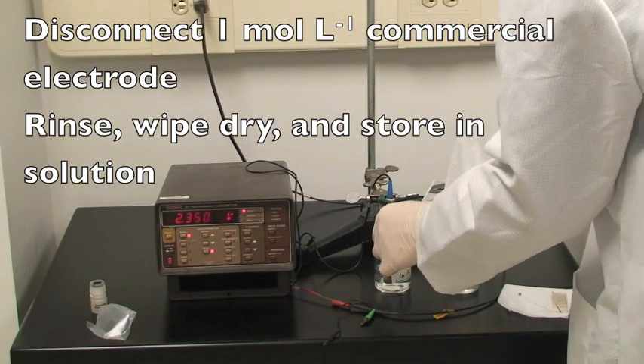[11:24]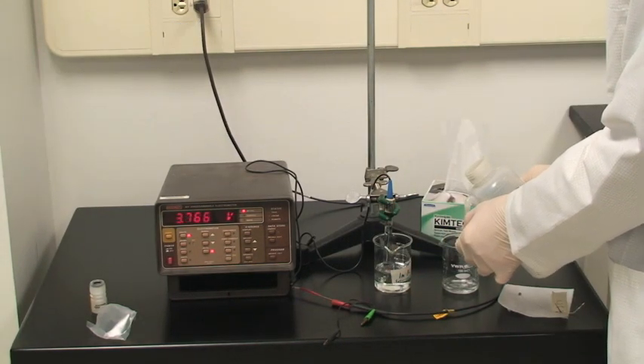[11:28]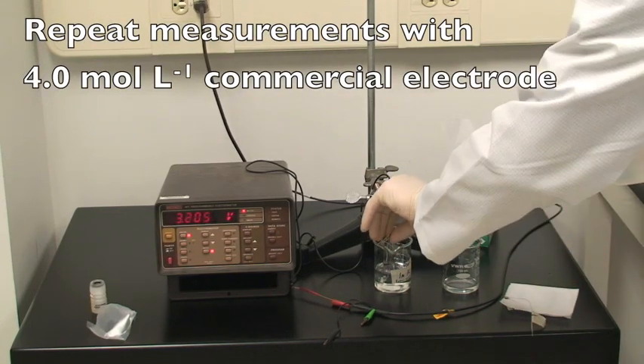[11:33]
Repeat this process and record the potential from electrode B with the 1 molar reference electrode. Disconnect the electrometer, remove the 1 molar reference electrode from the solution, rinse, wipe dry, and return to its storage container. And then repeat all measurements made using the 4 molar electrode.
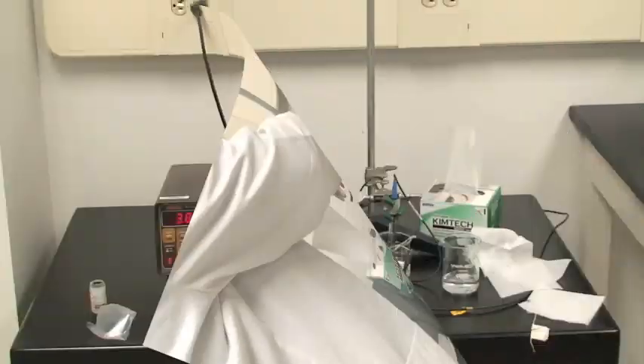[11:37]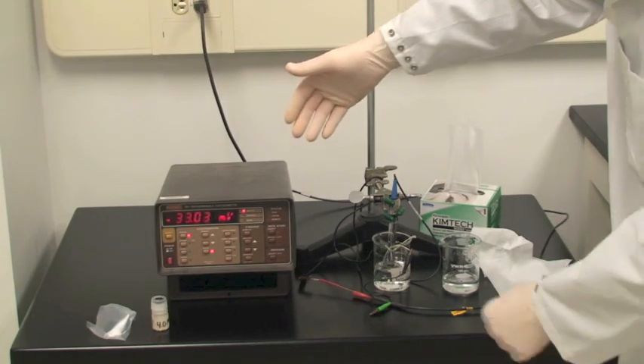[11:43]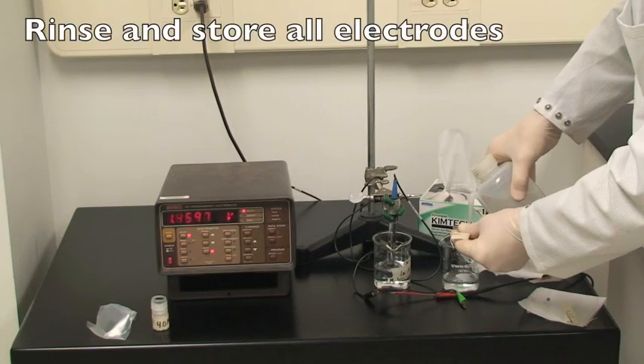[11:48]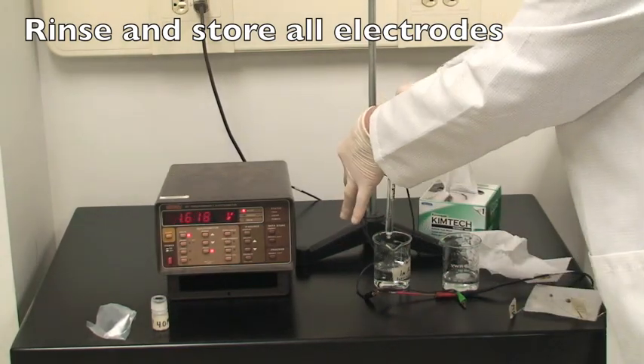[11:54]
When you've recorded the potential of electrode A and B in 1 molar potassium chloride versus 1 and 4 molar reference electrodes, you are now complete with the experimental phase. You may rinse and store the 4 molar electrode, rinse and store your 2 electrodes, and power down the electrometer.
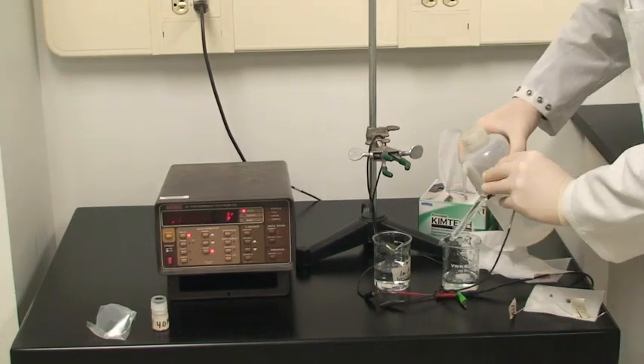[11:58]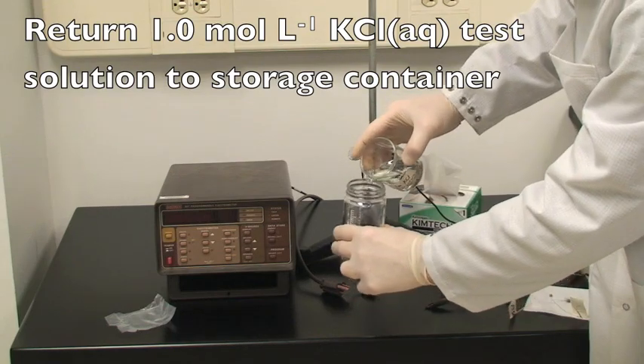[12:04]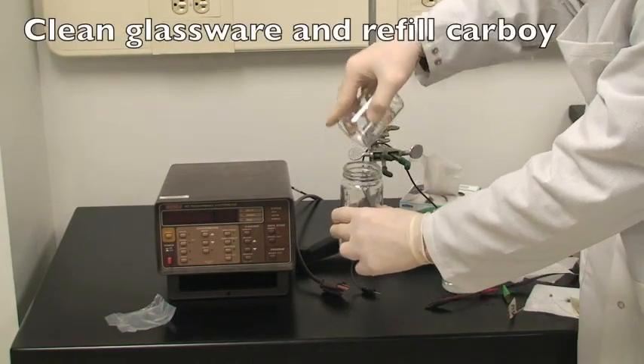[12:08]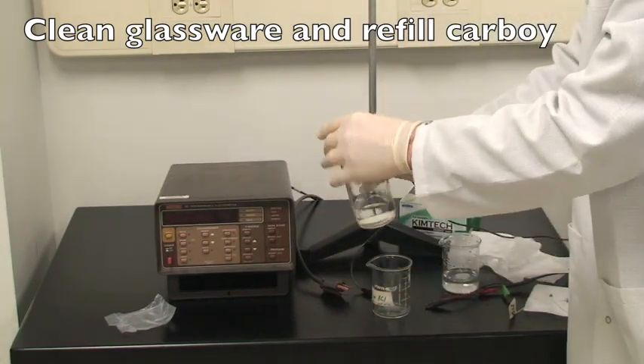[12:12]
Return the 1 molar potassium chloride test solution to the storage container. And please, before exiting the lab, clean all glassware and refill the carboy with distilled water.